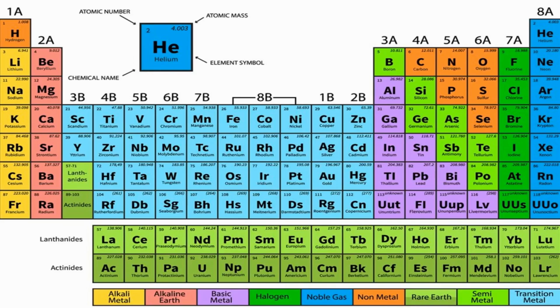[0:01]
Everything on the planet that has a mass is made from very tiny particles called atoms. Here's an example of that. This is a picture of carbon atoms in a piece of graphite found in the tip of a pencil. If these atoms were blown up to around 10 million times their normal size, they would look like the bumps on the bottom of an egg carton.
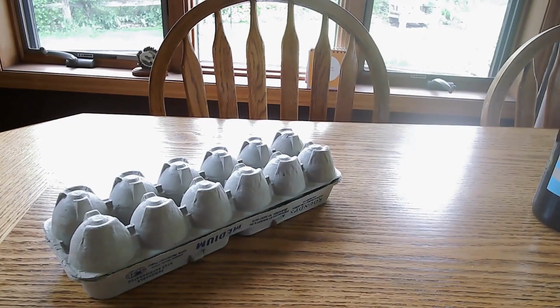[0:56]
Scientists use images like this one to study and learn about materials like graphite all the time. But actually getting an image of atoms is tough, since it's impossible for a normal microscope to zoom in far enough to see them. So if we can't see them, how do we find them, and where do images like this come from? The answer is that we don't see them at all. We feel them instead.
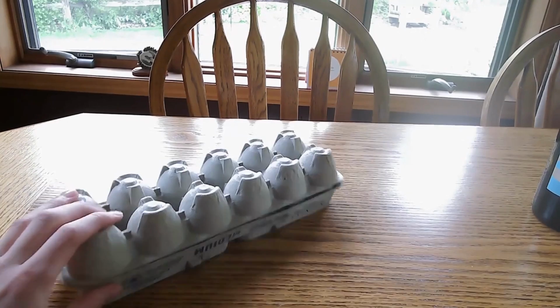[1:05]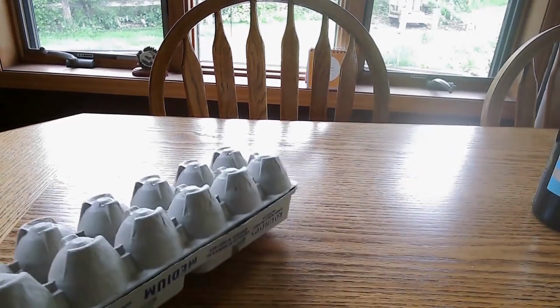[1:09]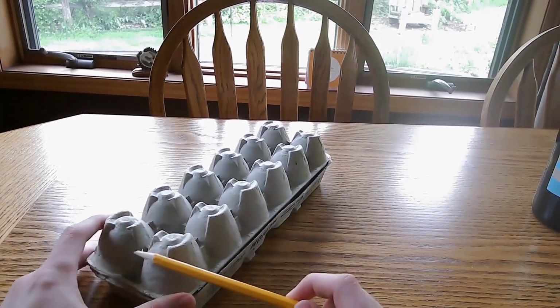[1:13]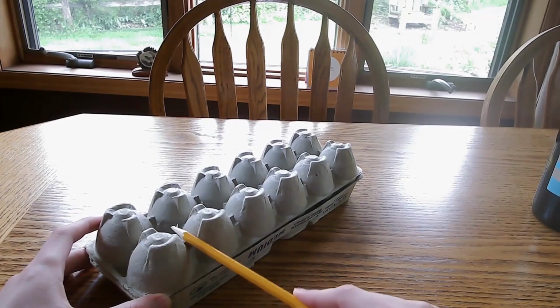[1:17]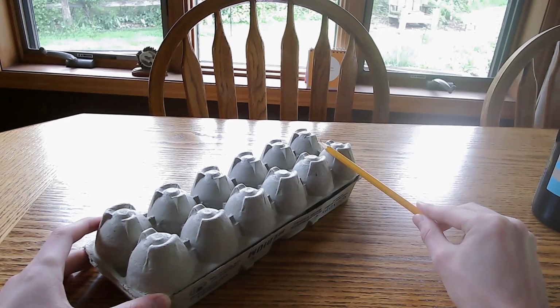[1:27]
In this video I'm going to show you how to build a working model of an atomic force microscope, or AFM for short. This is a special microscope that feels the atoms, a lot like me feeling the egg carton bumps here with this pencil, and then makes a picture of them based on that. First I'll demonstrate how an AFM works. Then I'll show you how to put it together for yourself.
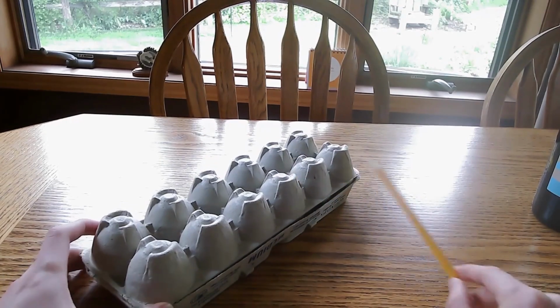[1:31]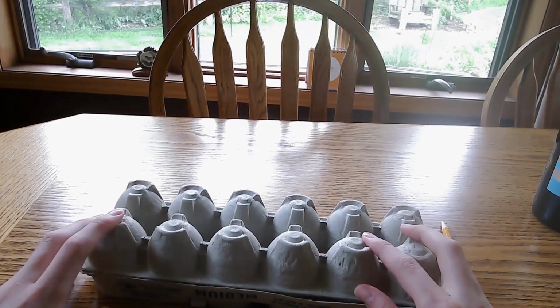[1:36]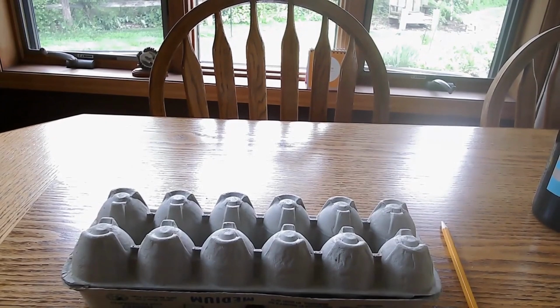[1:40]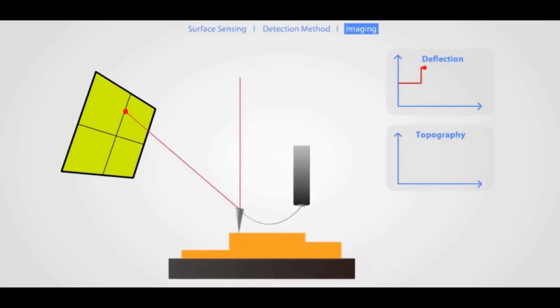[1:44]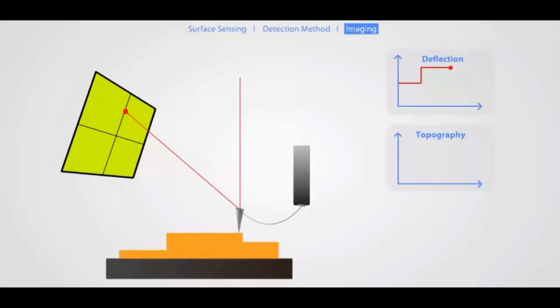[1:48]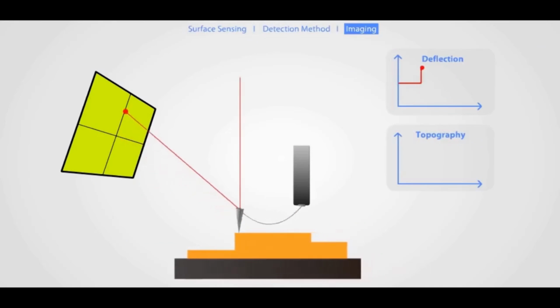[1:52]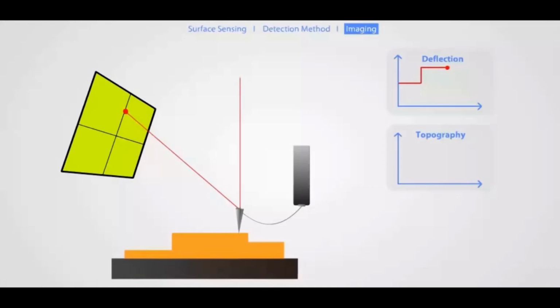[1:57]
If you want more information on this stuff, like why this measurement is important, the attached paper has that, as well as some alternate building materials that won't be shown in this video. So just for reference, this is what a real setup would look like. Instead of a pencil, real AFMs use what's called a cantilever to find atoms. Our model one is going to recreate this setup as best as we can.
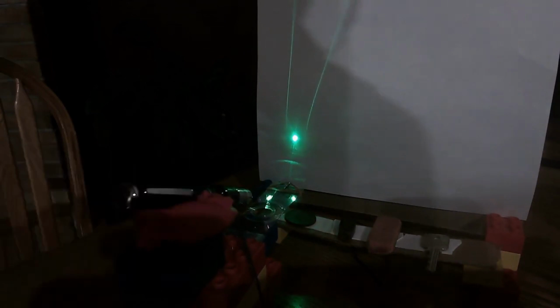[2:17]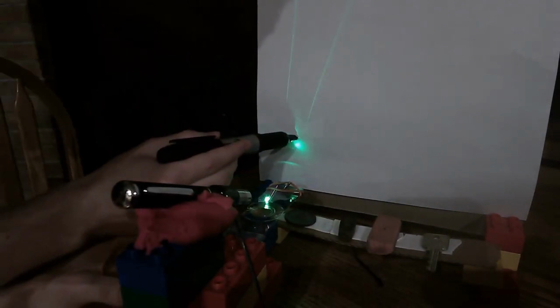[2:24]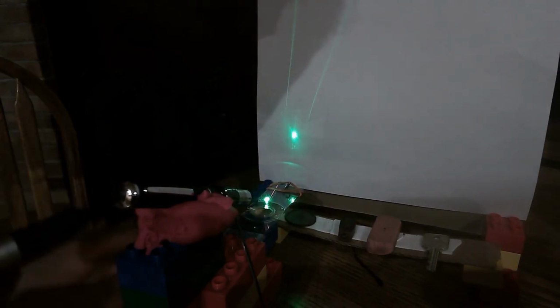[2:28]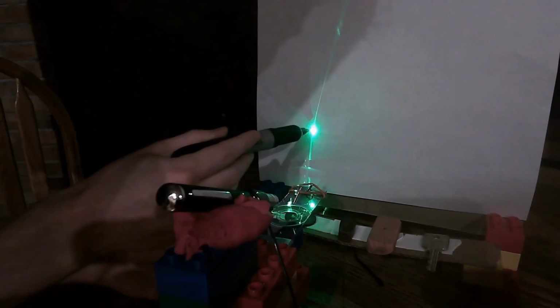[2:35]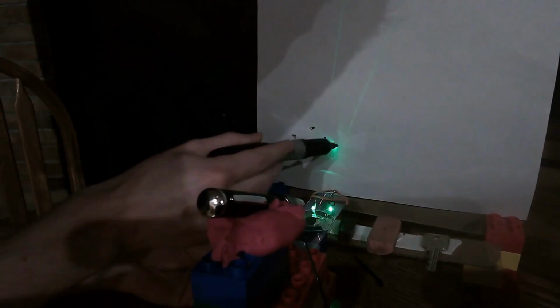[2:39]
This is what the AFM is going to look like when it's all put together. I turned off the lights so that the laser pointer is easier to see for the demonstration. Basically, there's a paper clip on the end of the model AFM and it's going to hit some random household objects that I set up. When it does, it makes the CD strip bend upward, which then moves the laser pointer higher on the paper. The bigger the object, the higher the laser pointer should go.
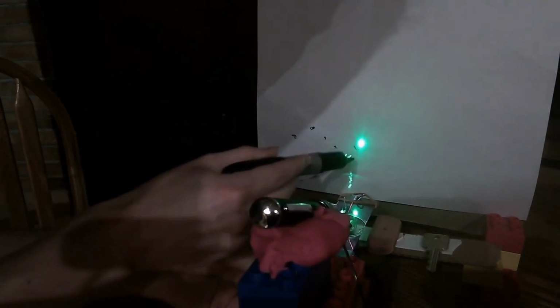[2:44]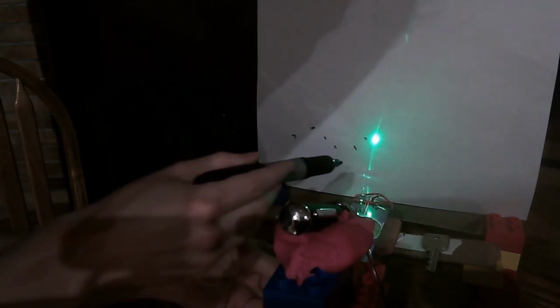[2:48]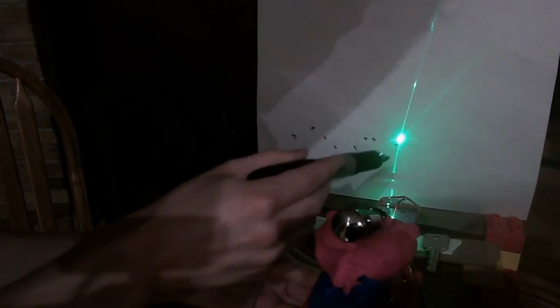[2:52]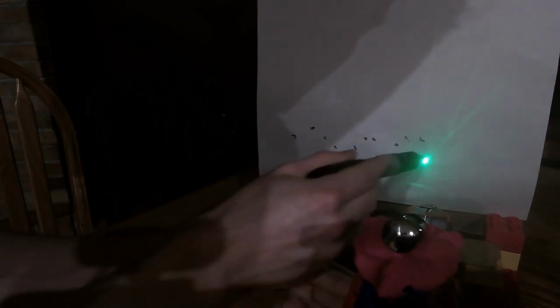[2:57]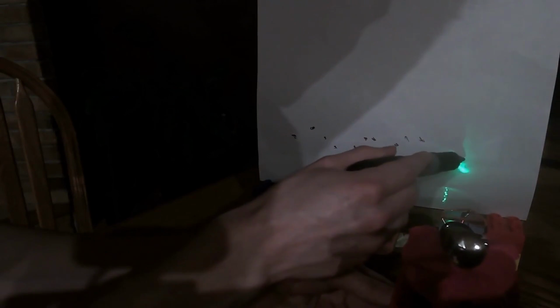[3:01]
This is exactly how a real AFM works. It's just that ours is on a much larger scale. With a marker I'm recording where the laser has been. In a real setup, that data would be given to a computer which generates that image that you saw earlier. And now that you see how it works and what it's supposed to look like, let's put it together.
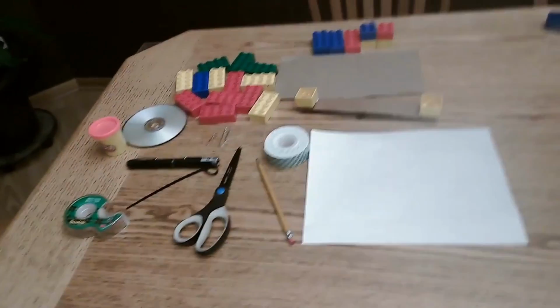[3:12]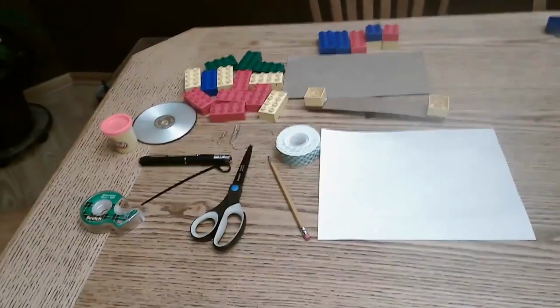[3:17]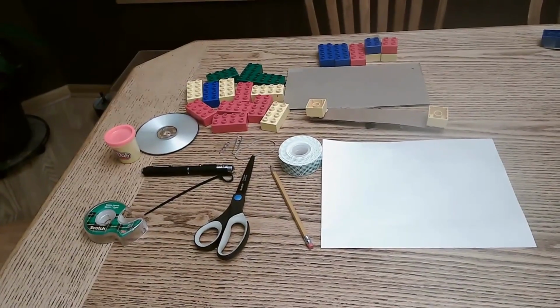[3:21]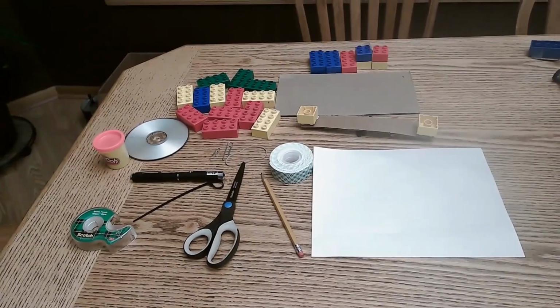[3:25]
Okay, everything you need to put together the model AFM and a testing station for it is laid out on the table. You're going to need a laser pointer, a small tub of play-doh, a couple CDs, some Legos. I'm using Duplo because it's easier that way since Duplos are larger, but any will work. A few strips of cardboard and sheets of paper. You're going to need some regular tape. If you have it, mounting tape is nice, but it's not necessary.
You're going to need a paper clip, a rubber band or a hair tie, a zip tie, scissors, and a pen, pencil, or marker.
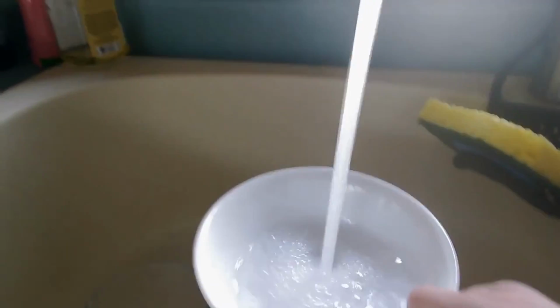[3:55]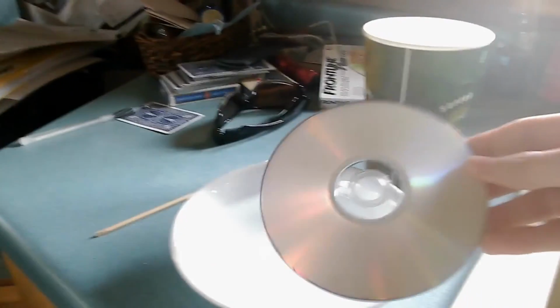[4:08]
The first thing that you want to do is put the CDs, however many you have, you're going to want spares, so at least two, into some hot water for about 10 minutes. This is going to soften them up and will make them easier to work with later on.
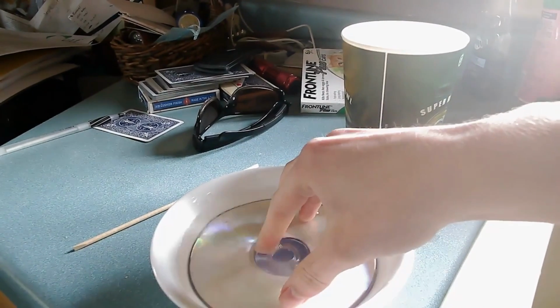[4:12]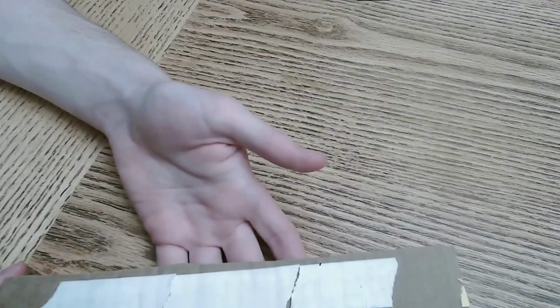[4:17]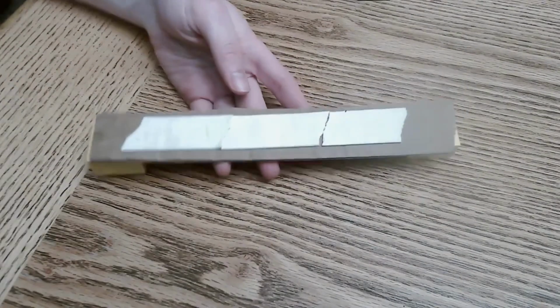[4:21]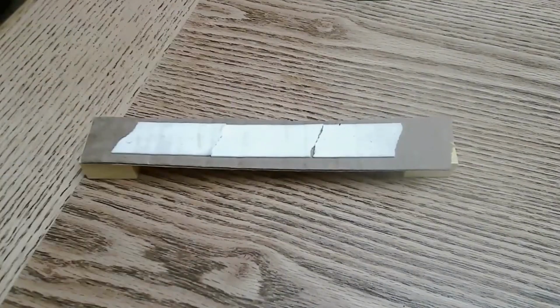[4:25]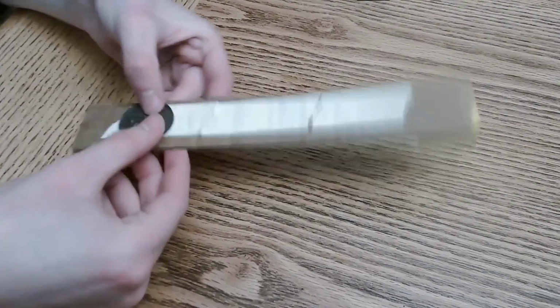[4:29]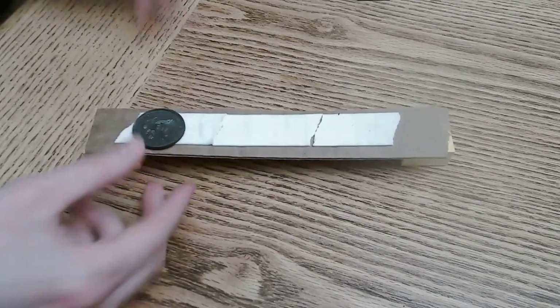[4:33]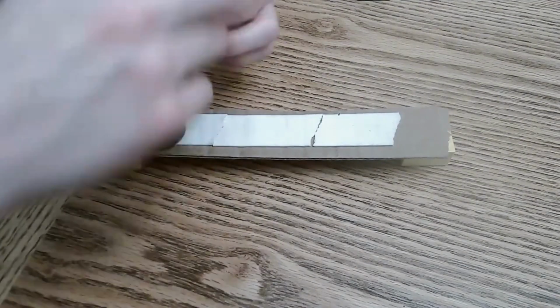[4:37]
While the CDs are sitting in the water, I'm going to build a testing station. One part of this, as you can see, is just a cardboard strip, and I'm going to put some random household objects on it for testing. For me those are going to be a plastic coin, and, I don't actually know what this is, but I found it and I'm going to use it.
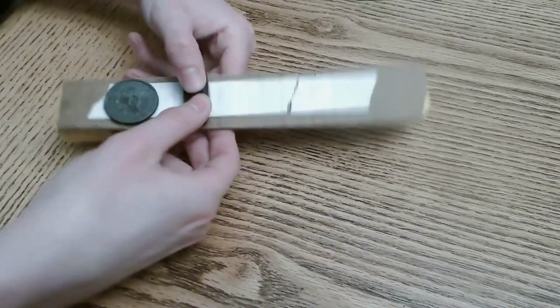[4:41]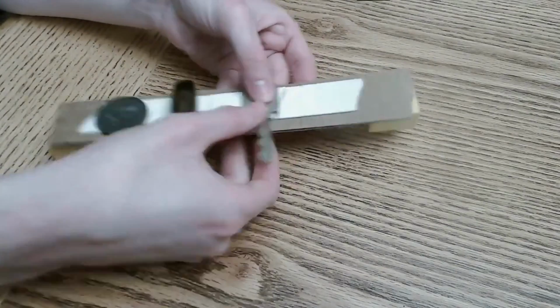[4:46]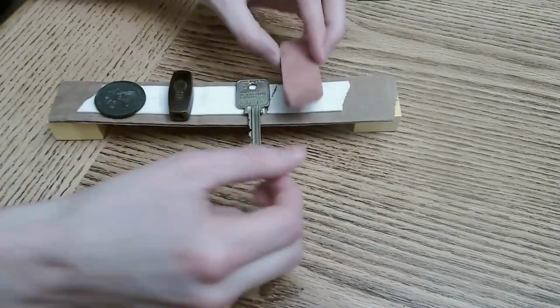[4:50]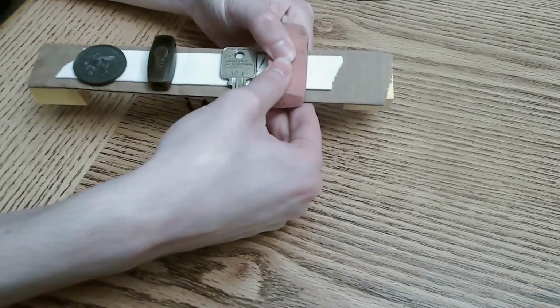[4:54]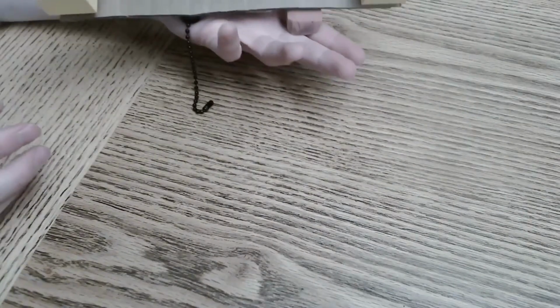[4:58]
Then we got a key and then lastly a big eraser. So these are going to be the things that I'm testing out. If you don't have this nice mounting tape then regular tape works fine. Your setup is just going to look a little different from mine.
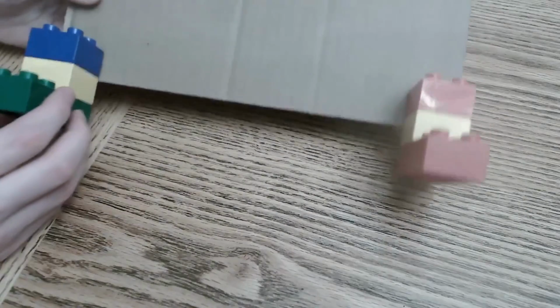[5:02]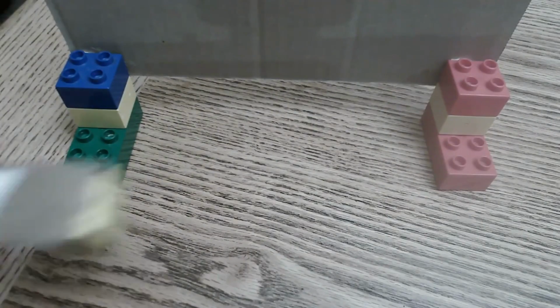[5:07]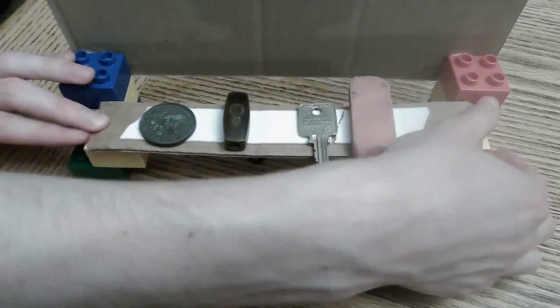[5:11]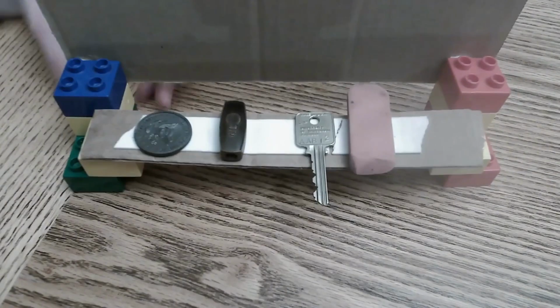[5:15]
The other part of it is a larger backdrop to catch the laser pointer when it's being reflected. Also as I'm sure you've noticed I've attached Legos to everything. This is so that everything can click into place together and it makes testing your AFM a lot easier.
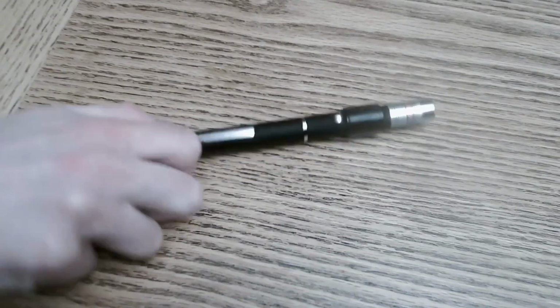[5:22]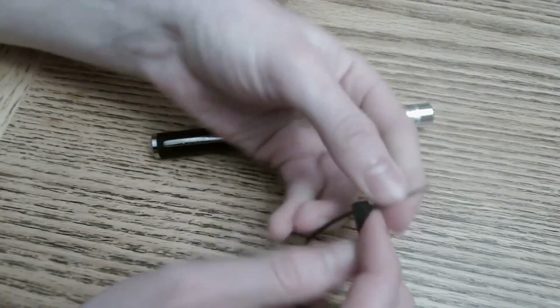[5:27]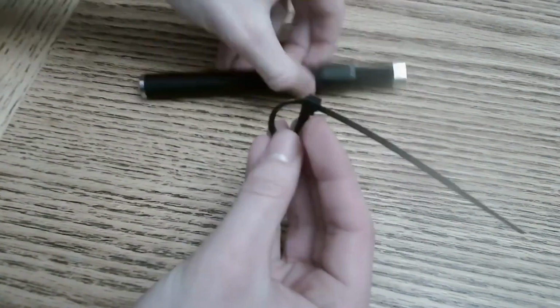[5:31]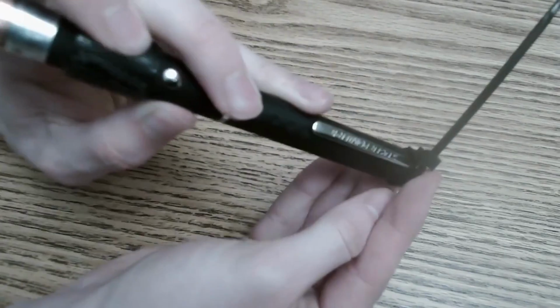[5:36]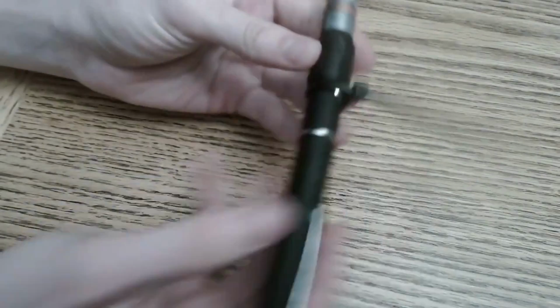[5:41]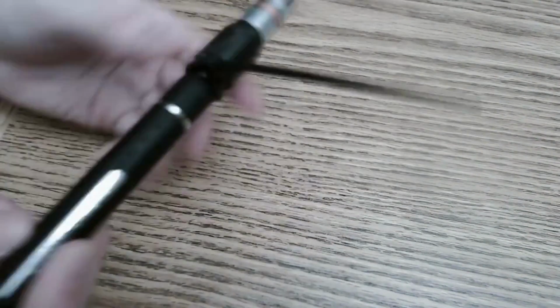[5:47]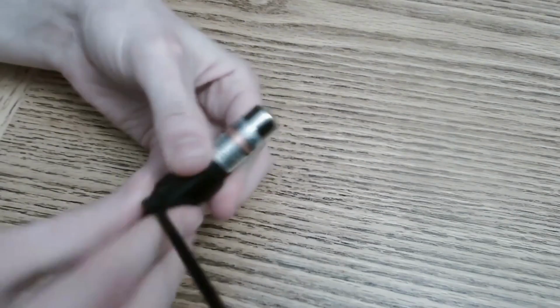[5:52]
Next you're going to want to modify your laser pointer a bit. So take your zip tie and close it. Get it so that it's almost snug around the laser pointer. It's going to be a bit tough to slide on if you do it right. But this way you can just rotate the zip tie a bit and the laser pointer will stay on without you having to hold the button. It's also helpful to wrap some tape around above the button to hold the zip tie in place.
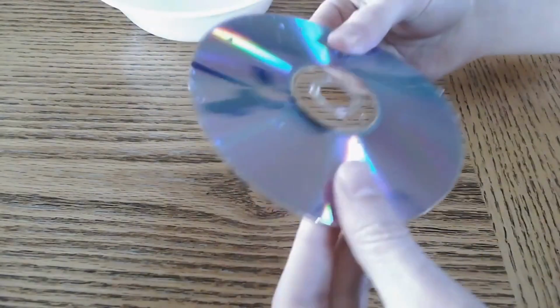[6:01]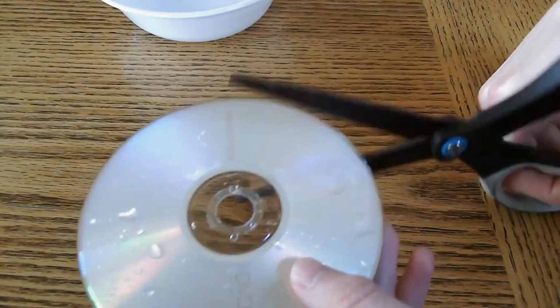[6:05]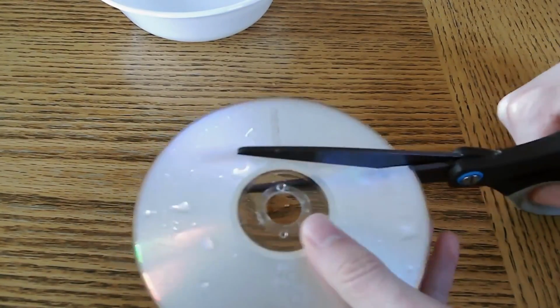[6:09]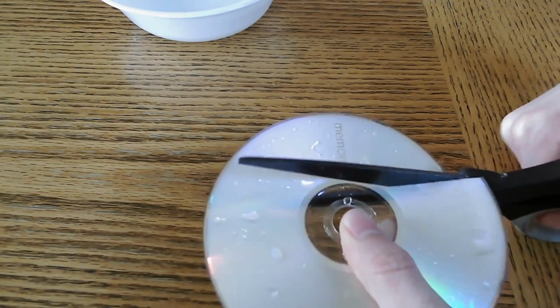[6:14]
My CDs have been sitting in the hot water for a while so what I'm going to do is cut one into a narrow strip. The CD is still pretty tough so this is fairly slow going. It's totally safe, it just takes a little force, but if you don't feel comfortable you could have a parent do this part if you want.
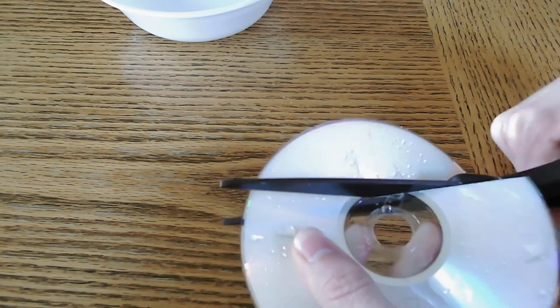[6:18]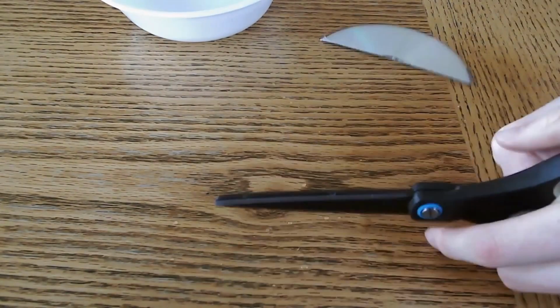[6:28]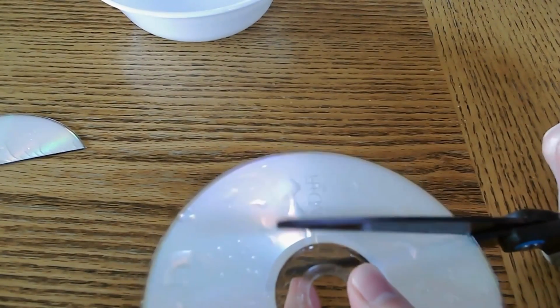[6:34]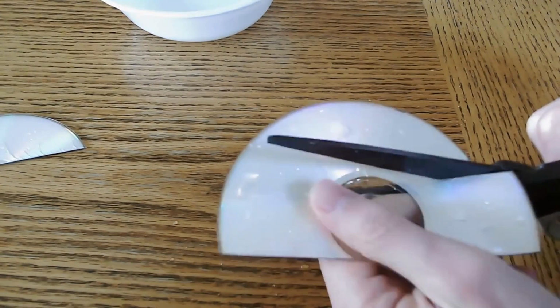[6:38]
You can make this strip as thick or as thin as you want but if you go too far either way it won't work as well when doing the measurement later on. It's all right if some of it comes off or if it's got some cracks in it. You'll see over the course of putting it all together that some chunks of mine have fallen out in the process but it is good to have a couple spare CDs in case the first try doesn't work out.
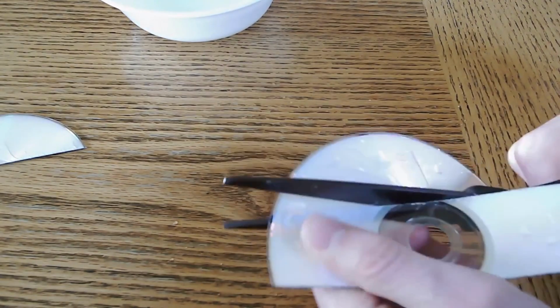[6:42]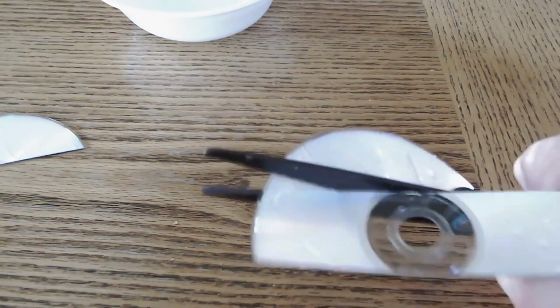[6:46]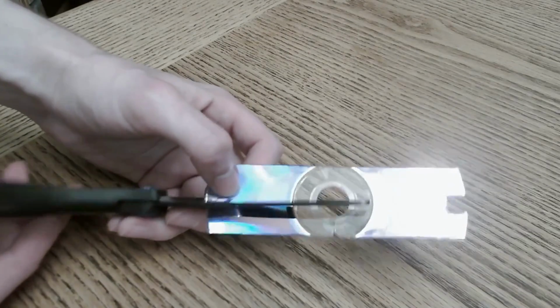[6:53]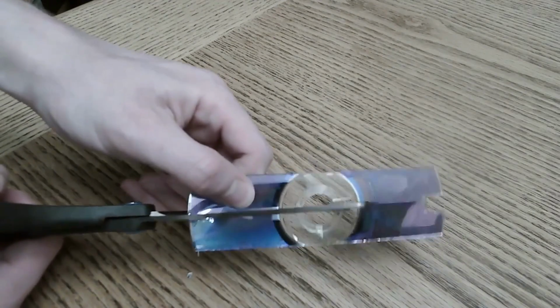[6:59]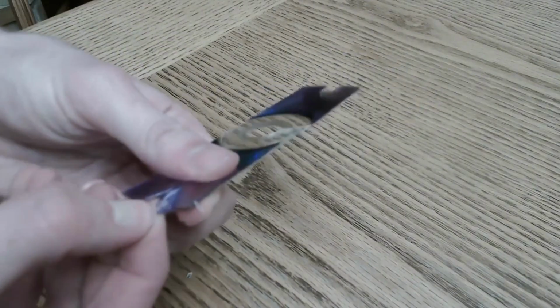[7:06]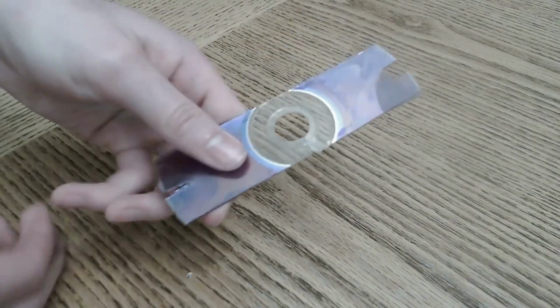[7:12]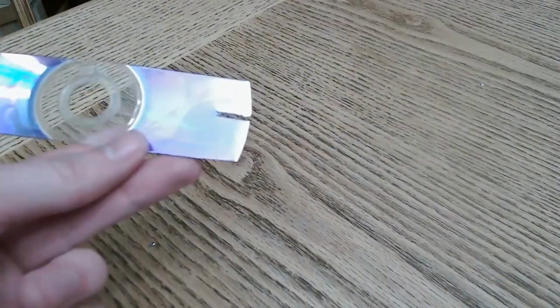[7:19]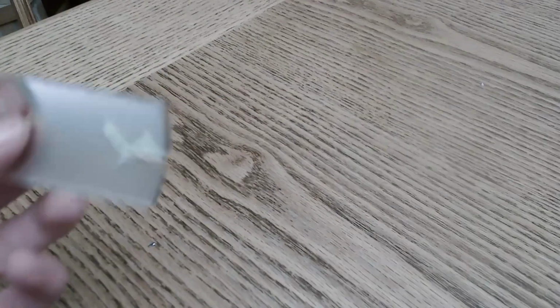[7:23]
Once you've got your strip cut you're going to want to make another cut at the tip of it just big enough to fit the paper clip. The easiest way to do this is to cut two straight lines out and then bend the plastic in the middle until it breaks off. And you can see on the other end I cut out too big of a strip so it's okay to use the other side if you don't get it right the first time. Quickly I wanted to show you what it should look like when you're done cutting out the slot. Make sure to make it as thin as possible.
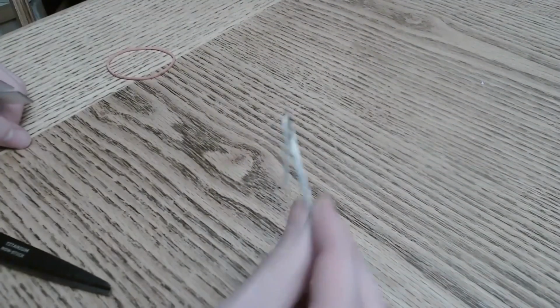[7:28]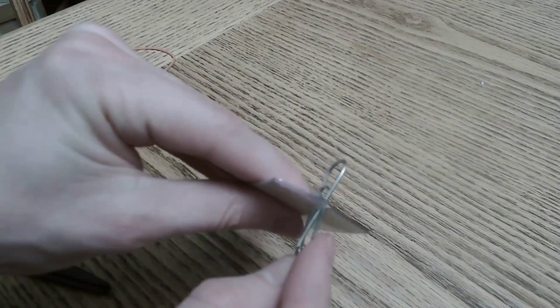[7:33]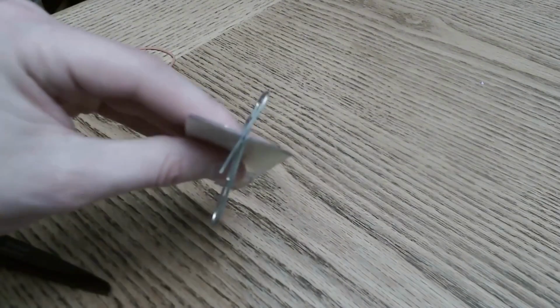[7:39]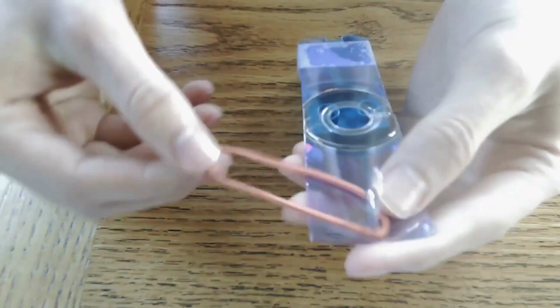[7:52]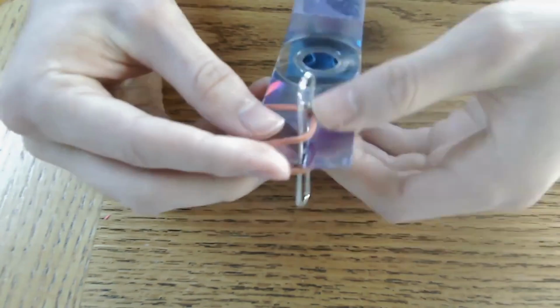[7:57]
Next we want to attach the paper clip into the slot that we cut out. To start out you're going to want to bend the paper clip and then slide it in place so that it can stay in there on its own. Once you've got it in there take your rubber band or hair tie and wrap it around the paper clip to really secure it in there. This is the trickiest part of this whole setup. It might take a while to get this right and that's okay, just do it as many times as you need to.
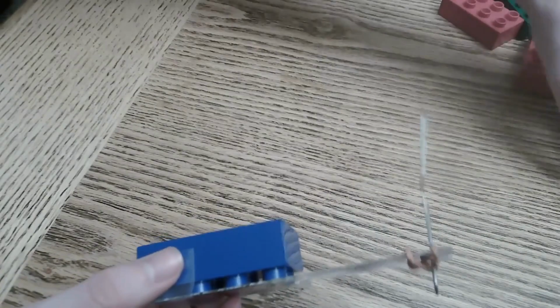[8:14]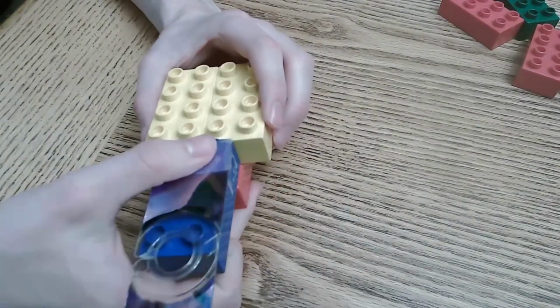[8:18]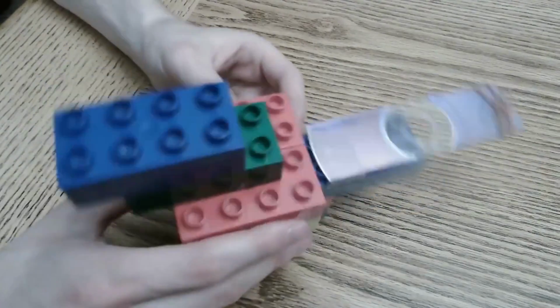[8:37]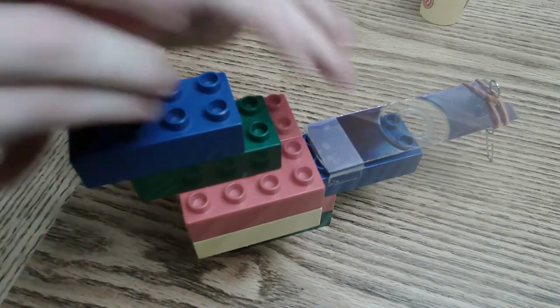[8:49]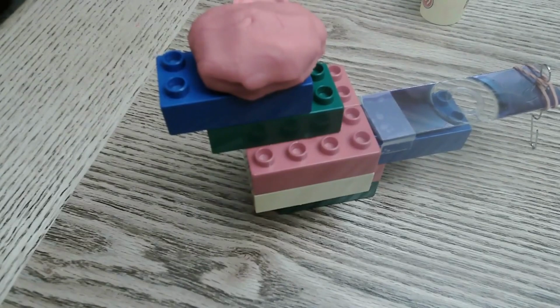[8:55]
Now that we have all the pieces we can put the AFM together. What this basically is is a base made out of Legos as big or as small as you want. You just have to use tape to fix the CD strip with the paper clip in it onto one end. Make sure that the shiny side is face up. On the other side you make room for Play-Doh and what the Play-Doh is going to do is it's going to hold the laser pointer with the zip tie on it in place so that it can be pointed at the CD strip without you having to hold it there. And just like that the AFM is done.
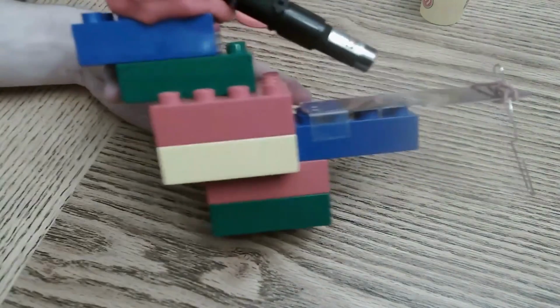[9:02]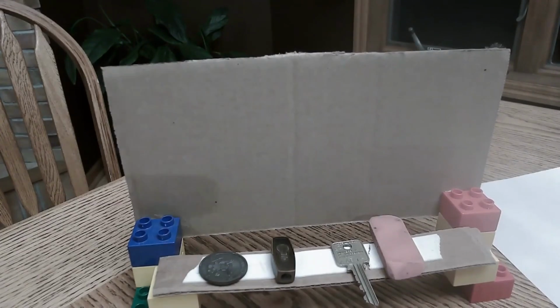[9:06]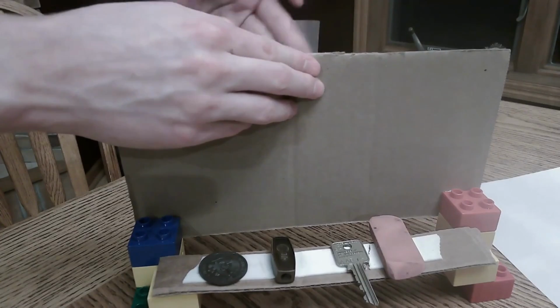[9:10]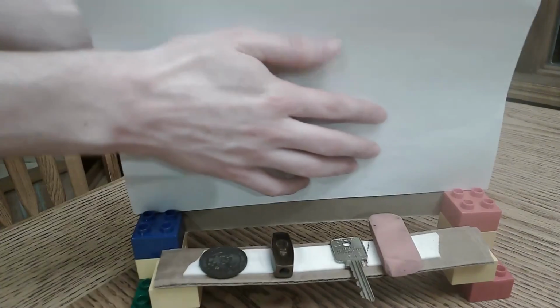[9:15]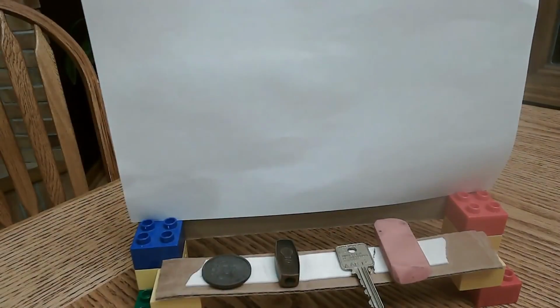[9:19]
And the final step is to tape a piece of paper onto the setup that you're testing with so that you can trace your laser pointer's path as it moves. And with that you are ready to test your AFM. And now we've come back to the beginning where if everything goes smoothly you should end up with a pattern of bumps that looks something like this. Check to see how accurate your AFM was in detecting where the objects were and how tall they were relative to one another. This is exactly the sort of data a real AFM gives.
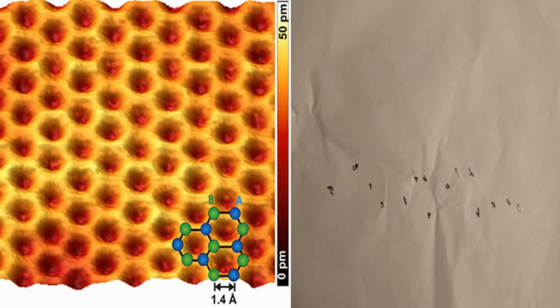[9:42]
Well, that's the end of the video. I hope you've learned a little bit today, not just about how atomic force microscopes work, but also about what scientists really do when they study a material.